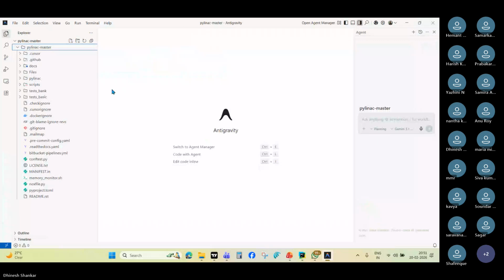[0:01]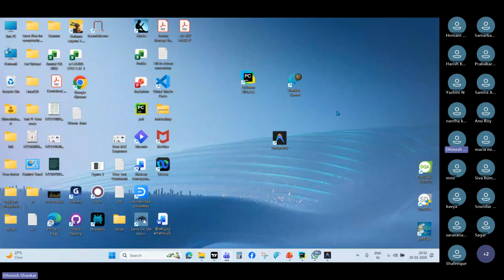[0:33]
So what we'll do, like that, we'll build our own application for field size analysis right now. Fine. See, this is the Pylinac module, which contains most of the QA analysis: log analysis, nuclear, picket fence, planar imaging, everything is there, even field analysis as well. So now we are building an application to do one particular QA, which is field analysis. We'll do it right now.
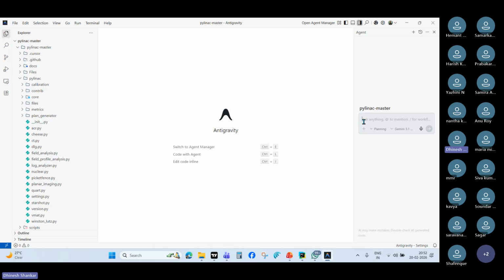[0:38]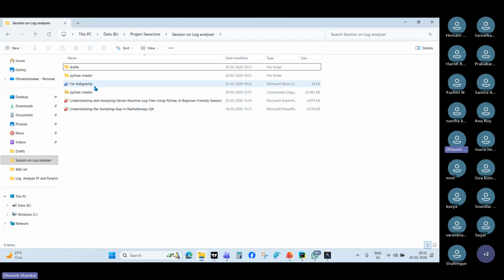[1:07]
So for that, what we have to do is give the instruction here on how the GUI interface will be created. There are two ways we can give an instruction. One is the blind, layman view. Simply type that we need to create a GUI, and it will create it, but it will take a longer time. And we have clear-cut information. For example, here,
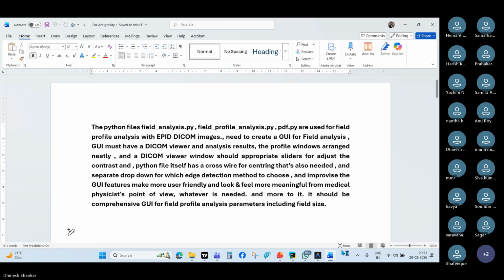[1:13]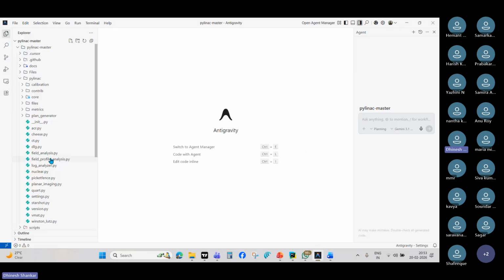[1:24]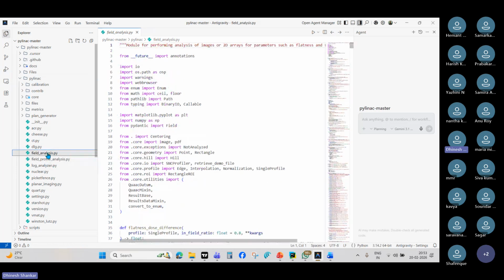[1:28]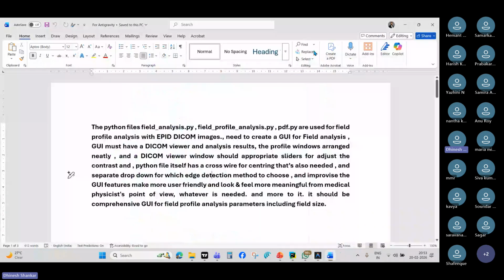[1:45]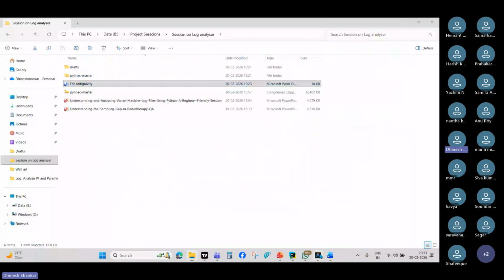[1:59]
I hope it is very clear to you. This Python, we have to mention somewhat very clearly. See, in the Pylinac files, this particular field profile analysis, field analysis.py and the PDF file. These are the three files. The most important thing is to analyze the EPID-based DICOM files for the field analysis. So we'll have to make sure that it is mentioned here. That is what I have mentioned here: field analysis.py and field profile analysis.py, and the PDF is for the final results, which will be generated in PDF format. These are the Python files. They're already here in this one.
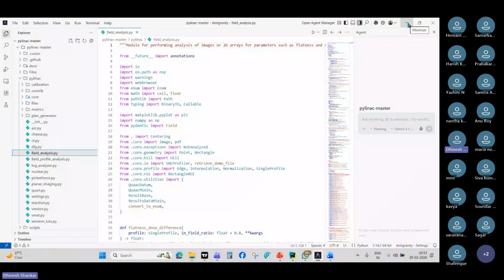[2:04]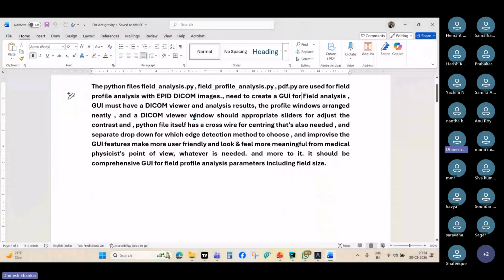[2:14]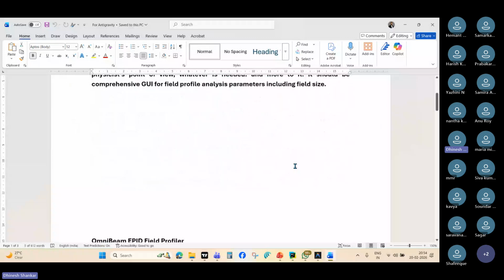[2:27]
We are using these files, on top of that Pylinac QA module, to create an application. For that, one way is simply writing that the GUI must have a DICOM viewer, analysis results, and the profile windows arranged neatly. Those are the instructions we are giving. This is the simplest way. Otherwise, we'll have to give very clear-cut instructions.
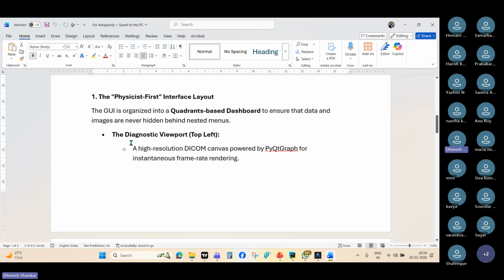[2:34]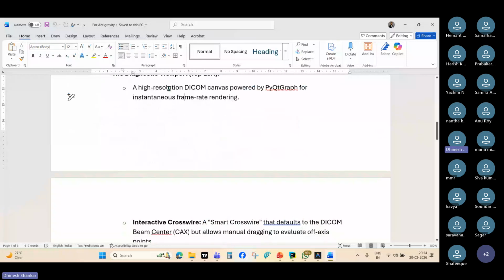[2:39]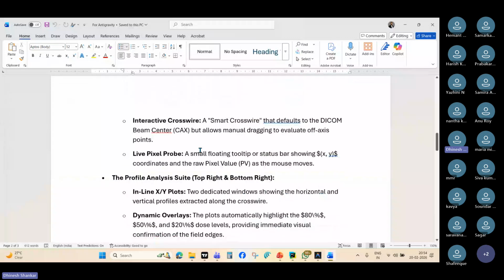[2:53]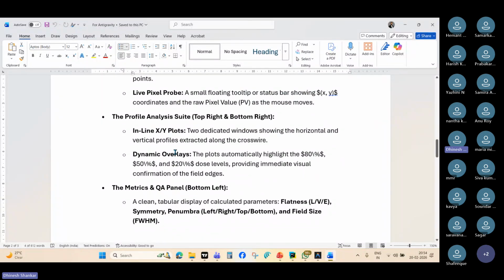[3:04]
So the diagnostic viewport will be in the top left corner. We'll have to use the DICOM canvas powered by PyQtGraph, one of the Python libraries, for plotting a graph from the DICOM image. The same way, we'll have to mention everything. We need an interactive crosswire for the DICOM images in the DICOM image viewer. So each and everything you will have to mention. If you mention it that way, in one shot, you will get an application as we desired.
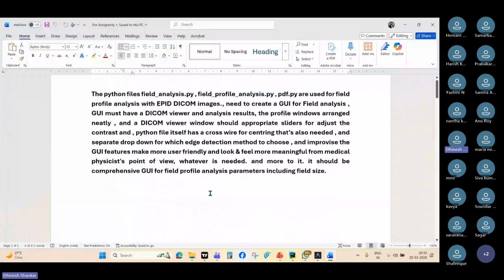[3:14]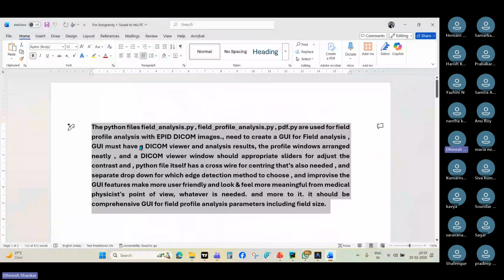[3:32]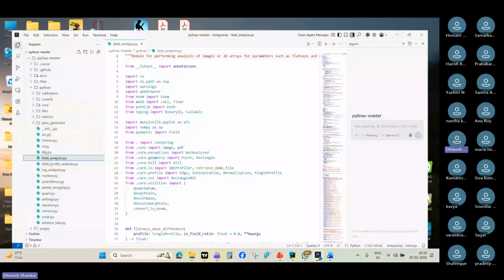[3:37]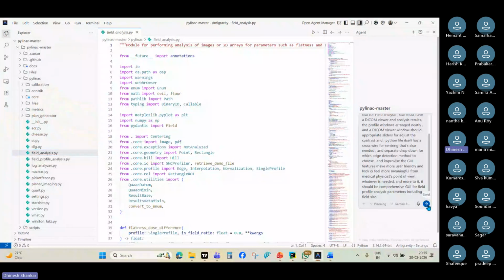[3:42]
Otherwise, what will happen if you follow the simpler instruction? Still, we will get it, but it will have some setbacks. Again, we have to correct it, and that will take much more than one to two hours. So I'm just simply copying it here, pasting it here. I'm asking this particular AI agent to build a GUI application. Fine.
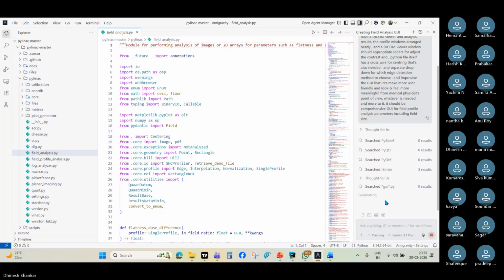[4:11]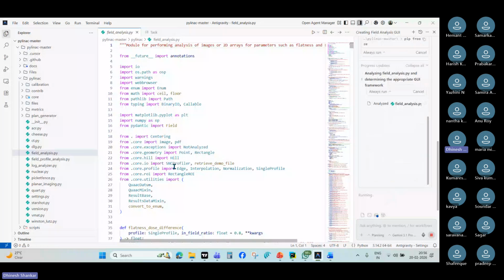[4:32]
Now, this particular AI agent is based on Gemini. In the same way, there are so many AI agents available. Each performs certain tasks in a better way. Claude AI is mostly known for large-scale coding. Now it will check each and every file in this particular project. It will look for these two files and do the QA process. It will take a while. If you have any questions, please ask.
Hello, sir. Am I audible? Yes, that's audible. Yes, please. Yes, sir. I had one doubt, sir. With this trajectory file, sir, can we find out the parallelism of jaws, sir? The angulations we will measure, no, sir? That one.
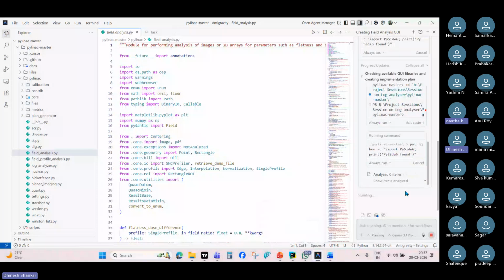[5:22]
With this one we cannot find the parallelism of the jaws, but there are other ways to find the same. Not with the Pylinac model. There is another code where we can find the parallelism of the jaws. It will give you all four jaws' parallelism parameters with certain angle values also.
Is that image based, sir, or internal trajectory file based? No, it is purely image based. We have to give any field size, mostly a larger field size, 30 by 30 or 40 by 40. If not, give an exact square field of 30 to 35. There is a logic behind it.
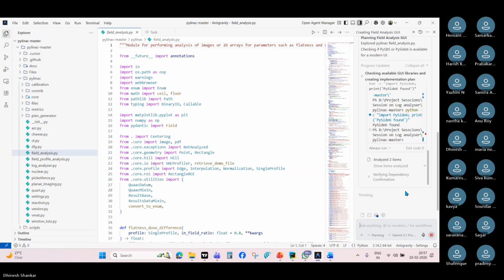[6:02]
It will analyze it and give you each jaw's parallelism value, whether it is deviated from zero by 0.1 degree or 2 degrees. Usually it is 0.1, 0.2 degree. It will give you the clear-cut value. Manually we adjust the angle, right, sir? In case any error comes, the engineer can manually adjust it.
Okay, sir. Thank you. Then I'll share the code with you if you want. Yes, sir, definitely. Thank you.
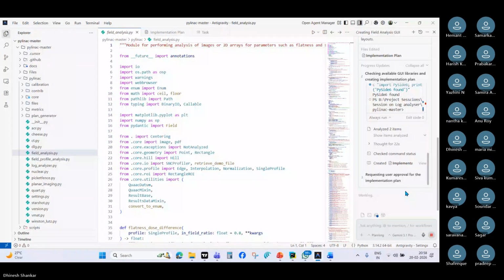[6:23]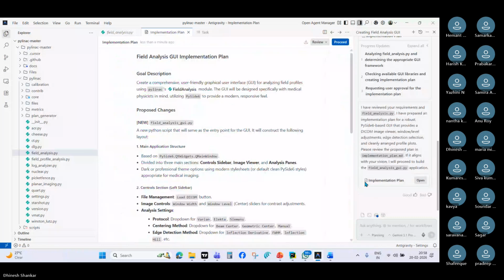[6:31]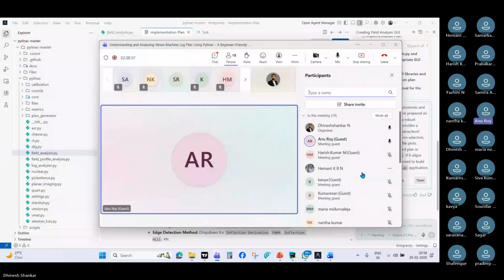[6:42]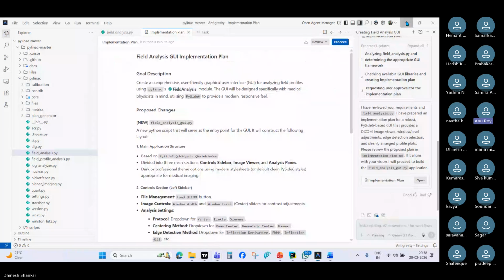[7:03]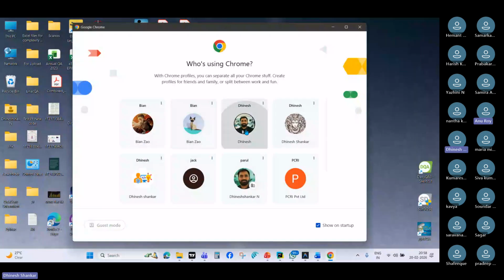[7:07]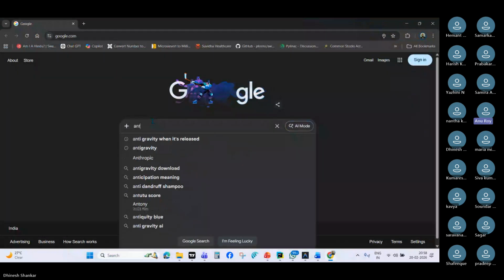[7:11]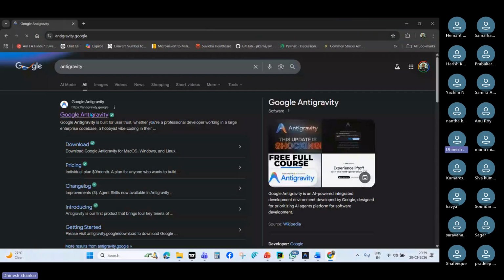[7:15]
Hello, sir. Like Python, we want to install this Anti-Gravity program for creating any application. Yes, just like PyCharm, we have to install it, but it is a lot easier than PyCharm, the installation process and everything. Will you include in any session how to install PyCharm for beginners? No, sir. This Anti-Gravity is a totally different program. It is an IDE along with the agent.
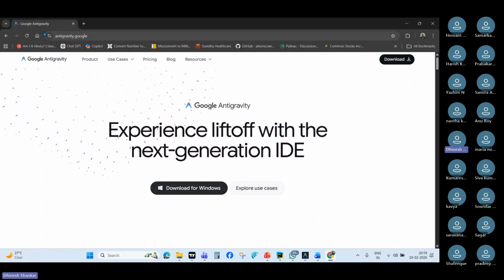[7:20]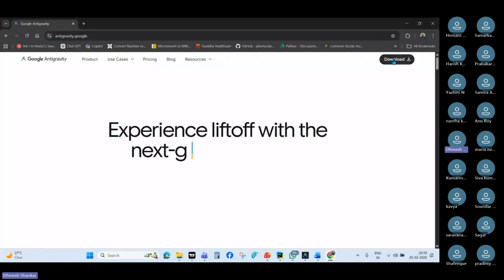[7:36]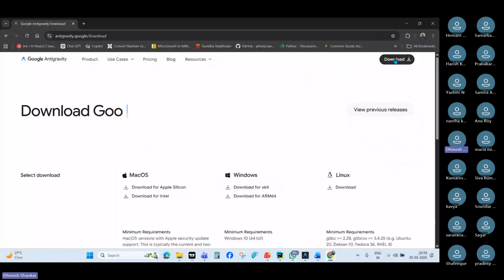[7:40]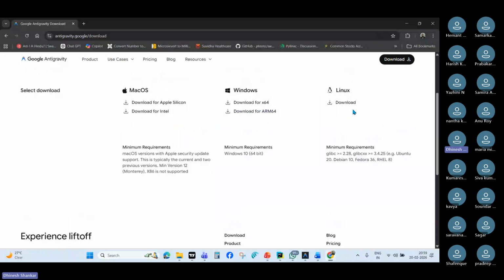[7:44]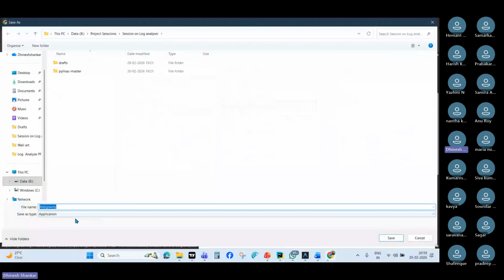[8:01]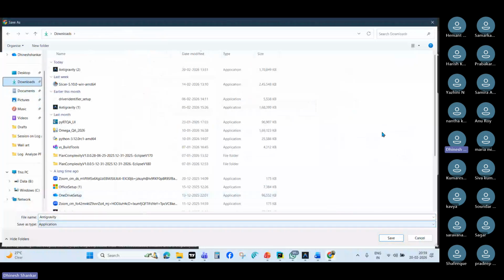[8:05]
Simply search in Google for Anti-Gravity. The first result will come, like Google Anti-Gravity. Can you see my window? Yes, sir. If you click Anti-Gravity, in the top right corner there is a download option. Once you click it, there will be three options for which system you are downloading, whether Mac OS, Windows, or Linux. Then there is a download for the 64-bit one. If you click that, the application executable file will open. You have to save it.
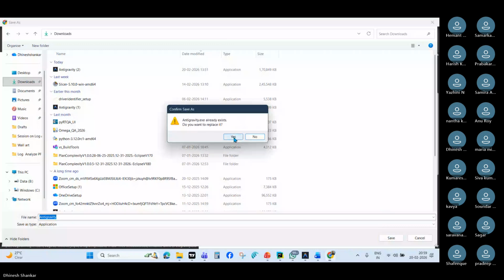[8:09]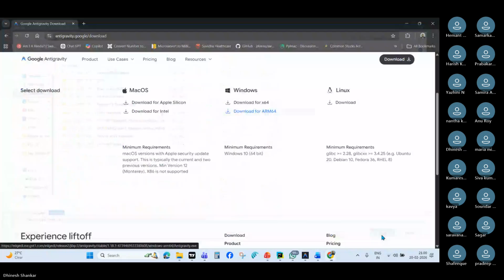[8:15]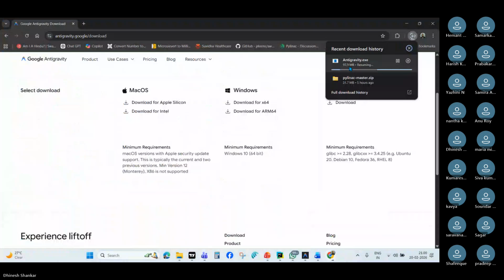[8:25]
It is already there, I'll do it somewhere else. Okay, it's downloading right now. Can you see the antigravity.exe? Yes, sir. It will take some time.
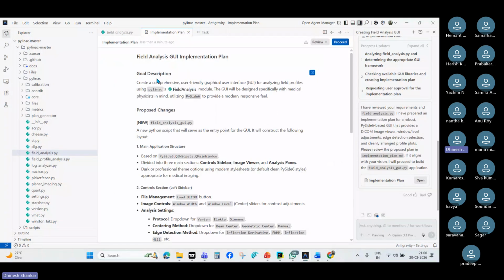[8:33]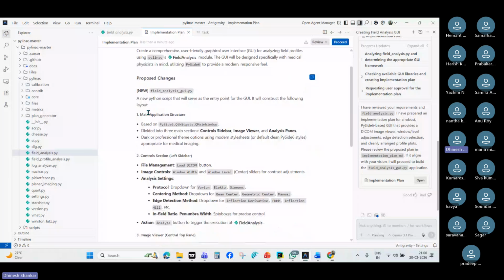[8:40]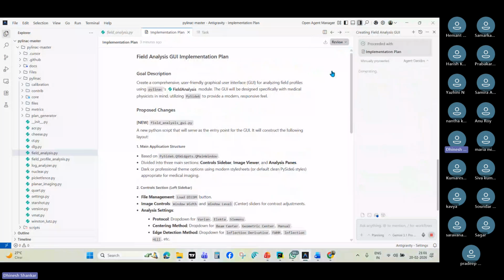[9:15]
In the meantime, it has created an implementation plan. If you read it thoroughly, it will give you the picture. The main application structure will be like this, based on which Python library it is using for the user interface, and how the sections are divided: control sidebar, image viewer, analysis panes, file management, load button, and image controls for window width and window level. Everything will be mentioned here. We have also mentioned a drop-down for Varian Elekta protocols. Once it is done here, we have to give proceed. If we give proceed, it moves on to generating the GUI-based code.
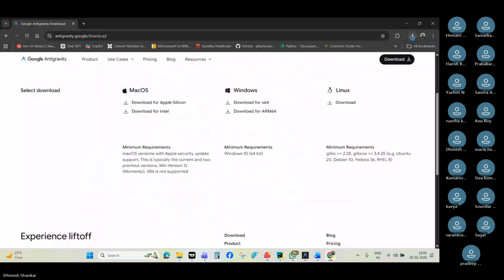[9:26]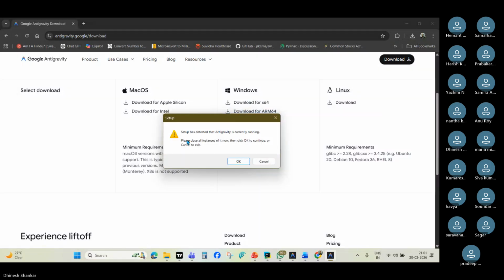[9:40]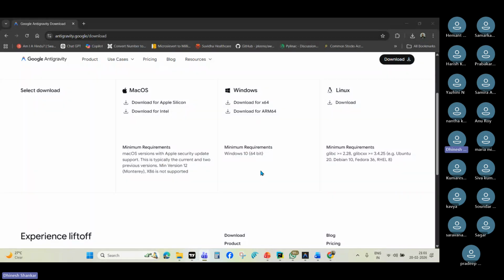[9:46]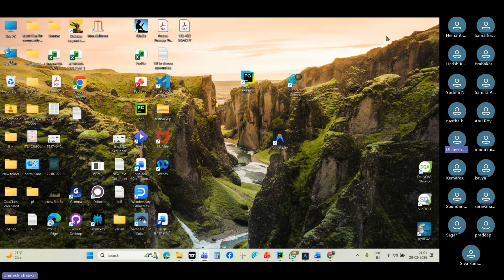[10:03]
Anu, right? Anti-Gravity is installed. Yes, sir. Once Anti-Gravity is installed, you simply click it here. Now Anti-Gravity is currently running, that is not opening, so I'm simply canceling it. Another window will pop up. There are some checkboxes. You have to check everything and press the next button. Within a few seconds it will be installed, and this is the icon file. It will look something like this.
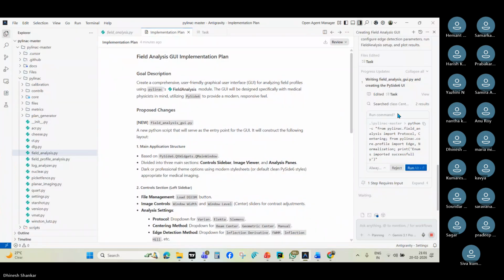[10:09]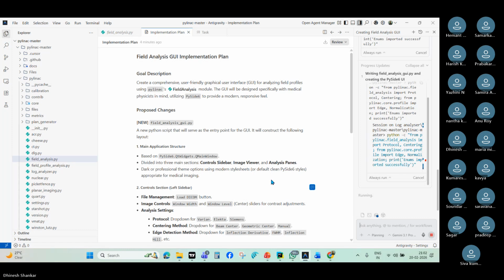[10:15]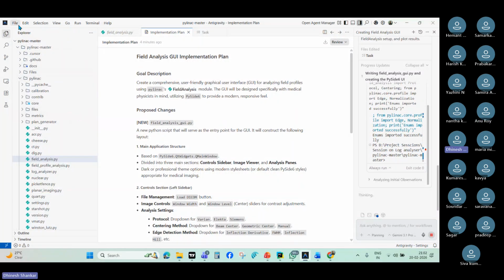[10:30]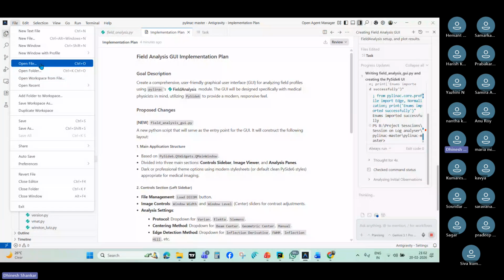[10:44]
So when we open this one, sir, we will get all these Python files which we are seeing on the left side of the screen. This particular section is called the project. I cannot go through this right now because it is generating here. You have to create your own project here. Open the folder, or open the file, or new files.
Like you have to create a new project depending upon your need. See, here I have already opened, by clicking the open folder, the folder where the Pylinac models are stored. In that particular explorer, I see all the Pylinac models are already stored in this location. So I opened it. I simply mentioned these two files are mandatory for me. With these files, just create a GUI.
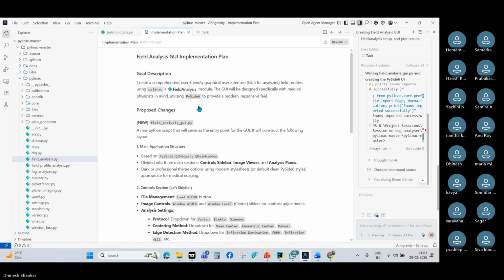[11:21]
So now it is doing the job. So we need some Pylinac modules to use this, sir. Yeah, see, first you have to make sure what you need exactly and what kind of problem you have, what kind of challenges you have. Based on that only we have to work. Okay. Now we have chosen that we need to do a field analysis.
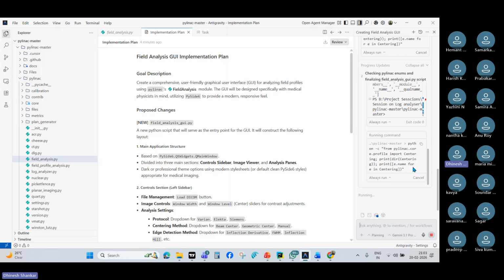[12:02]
For that field analysis, every time we have to give a run command if any error comes like that. For that field analysis, we have chosen the Pylinac model to do it. It is already a pre-built field analysis QA. I have chosen it because it will be faster to do.
Otherwise, without this Pylinac model, we can still analyze the EPID based DICOM based images for field analysis, but it will take lots of resources to go through. It will take a lot of time to generate the code, debug the code and validate it. So this is already there. By using that, I'm just creating it. It's a much easier and simpler way.
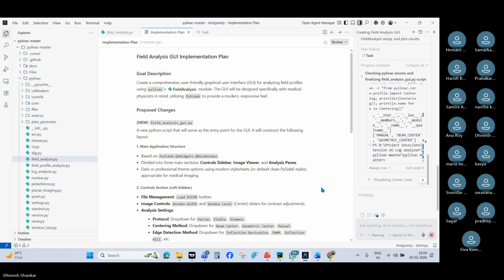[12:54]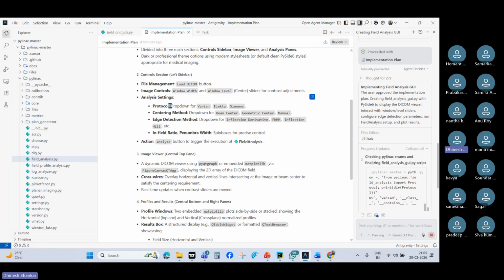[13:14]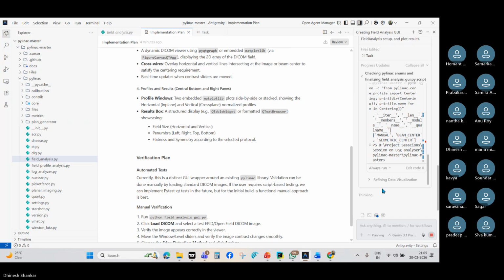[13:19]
So we have to decide first, sir, what is the problem you have, what is the task you want to carry out. Based on that, we'll have to work. See, if you see like this, we have given an implementation plan. See how to implement it. Now it will automatically think, and even execute that in the back end. And if an error comes, it automatically goes back and corrects those errors. And finally, it will give us a full-fledged GUI.
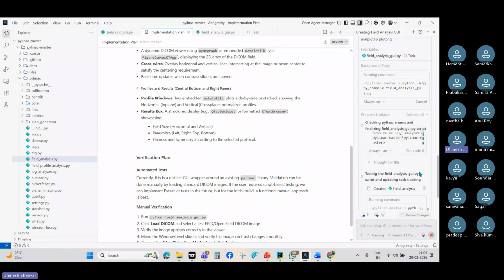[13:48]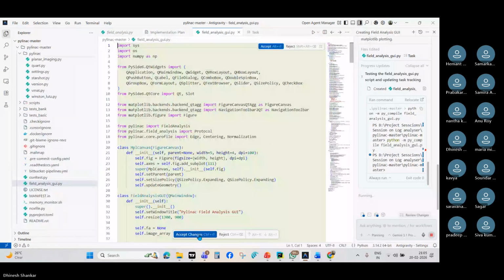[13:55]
I'm doing this for the first time, but for the particular field analysis, right? Even for the jaw parallelism, which Mr. Nandakumar was asking, we can do the GUI for that also, for which we already have the code.
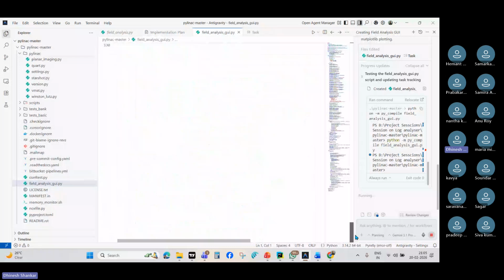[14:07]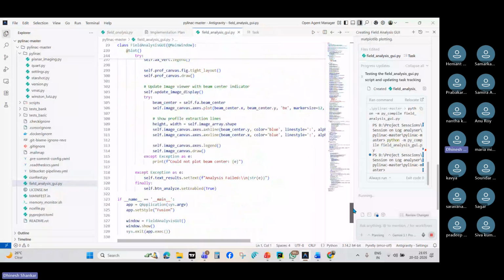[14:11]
See, now you can see the field_analysis_gui.py. That code is completely generated here. I don't know how many lines of code there are in the whole thing, nearly 330 lines of code generated right now for the GUI. Okay, and still it's running. We'll have to wait a few more minutes. It just keeps on running and correcting the errors. Then only can we proceed with the GUI.
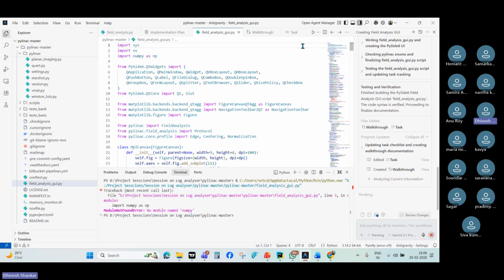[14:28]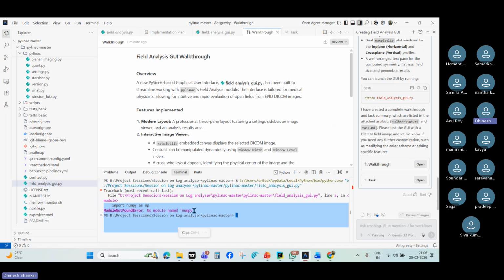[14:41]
Right now, I just run this program, field analysis.gui, using this Python file. See, the error comes: module not found. That is called numpy. Okay, so that particular Python library is not there. For that we have to pip install that package. Pip install numpy. So now we are installing that particular module here.
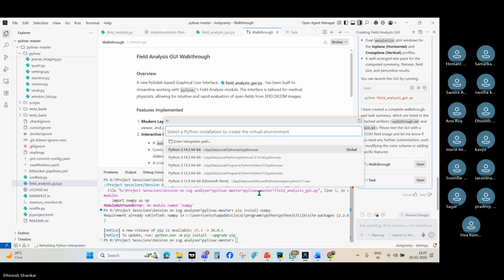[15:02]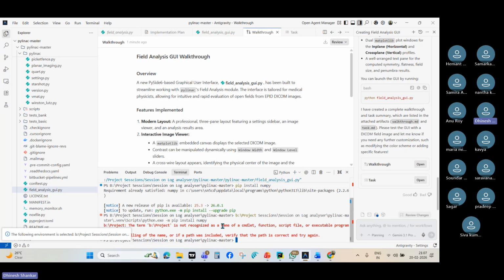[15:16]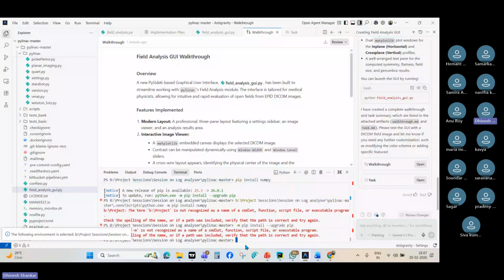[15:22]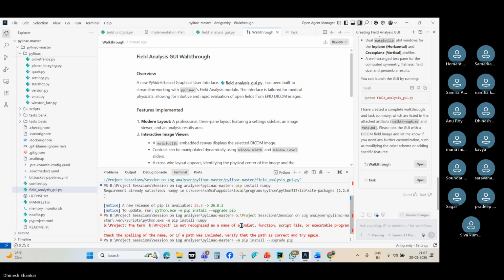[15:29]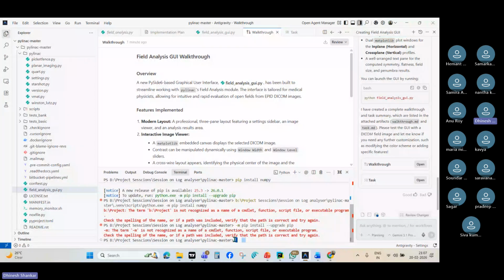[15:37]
So now it is showing that we have to upgrade certain things also. The pip installation is also outdated, so I'm just upgrading that. Okay. So still there are some errors popping up. What we can do is simply copy the error and say fix the issue, giving the instruction to this AI agent to fix it. Now it will do the work.
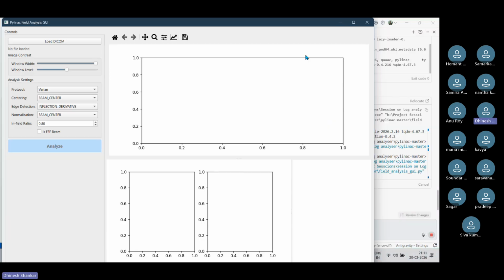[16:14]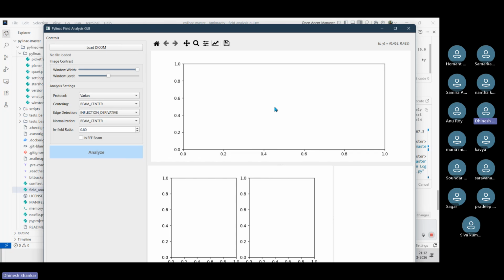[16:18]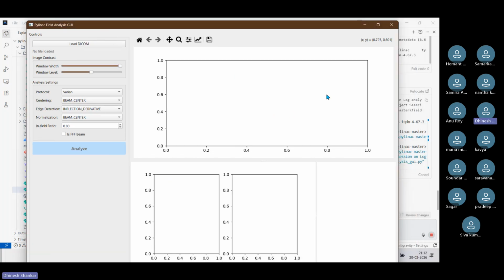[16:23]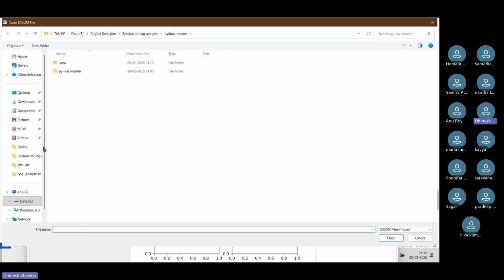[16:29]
See, okay, I made a mistake here. In this particular pip install, numpy was not supposed to be typed like that. There was a typing error. That is the reason it was not installed. After the package is installed, based on the input we have given, the GUI application has been generated here. Now this particular tab is to load the DICOM file. Now we'll try executing it and see how this application is working.
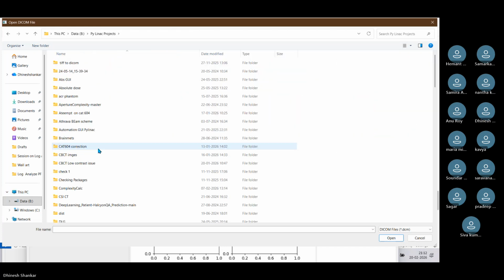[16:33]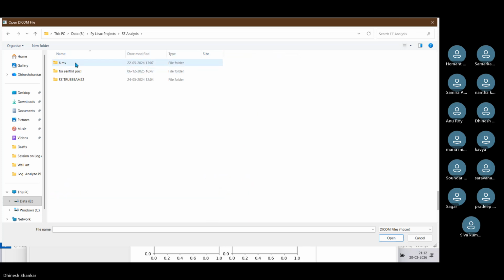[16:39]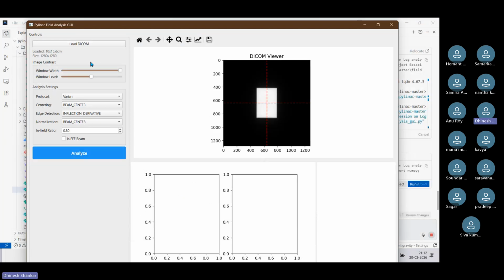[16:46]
Okay. Once it is loaded, the DICOM viewer shows the 10 by 15 file. This is what we used for window analysis. It has given a protocol for Varian, Siemens, Elekta, and asks whether you require beam centering or geometric centering. It has the edge detection method you want to use, like full width at half maximum or inflection here. And the normalization will be beam center. Okay, let's see how it is analyzing it.
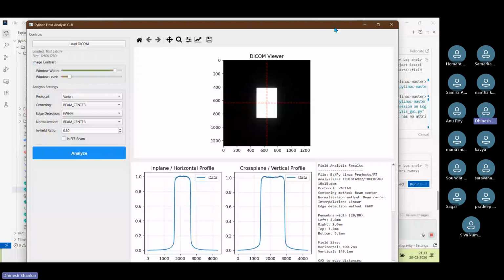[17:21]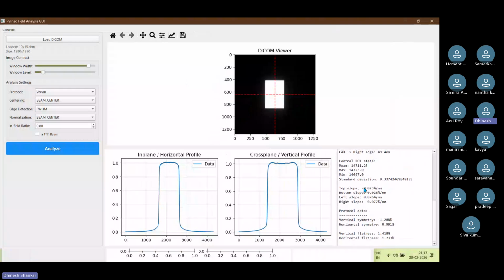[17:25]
Once it is analyzed, I hope you can see the results will be shown here. And these are the in plane and the cross plane images. Okay, the same way shows which protocol is used. The one thing I have missed out is to generate a report.
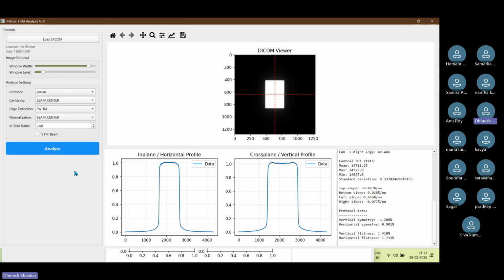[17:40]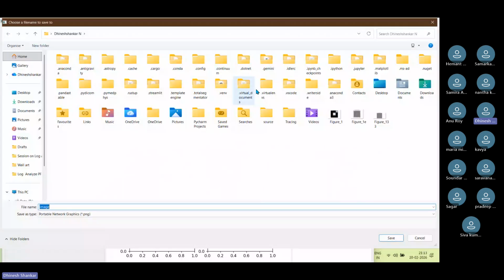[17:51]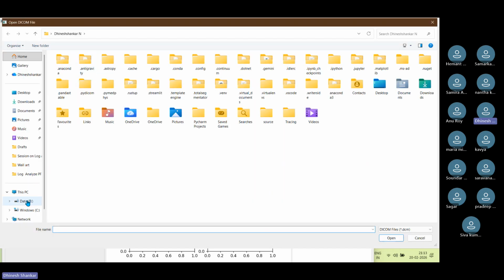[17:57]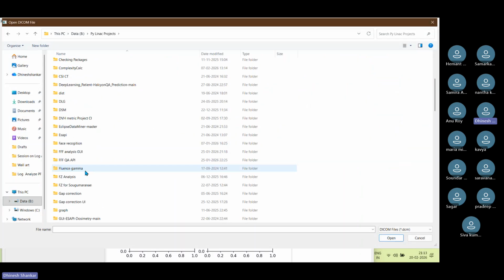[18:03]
Okay, so there is no button or toggle generated for generating the report. I think, okay, let's use this save figure. Okay, it is only to save the figure, not to generate the report. In the same way we can generate any kind of QA for your repetitive tasks. Let's check one more thing.
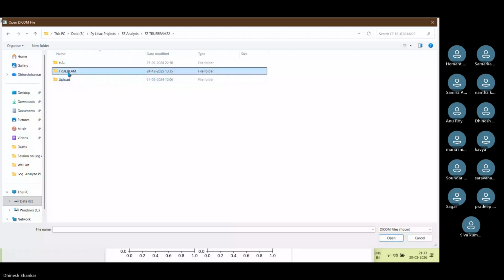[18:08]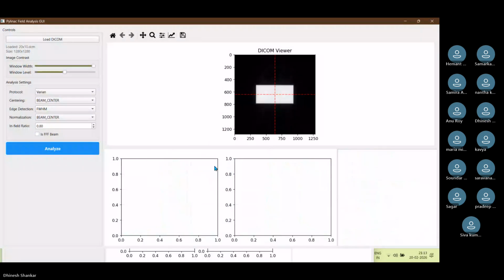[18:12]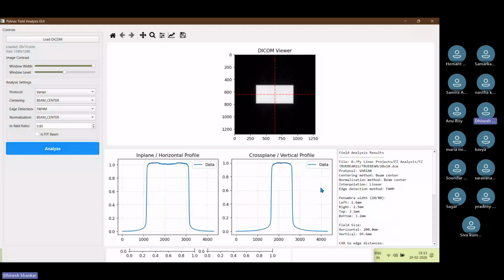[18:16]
For 20 by 10. Okay, this is the 20 by 10. We are analyzing it the same way. Okay, this is the in plane horizontal profile. Now as per this it is completely wrong. This is supposed to be in plane. Okay, not this one. And cross plane is like this one.
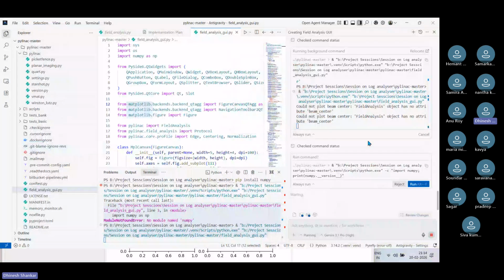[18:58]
Now this is the logic behind it. Then we need to correct it. We have to mention that this particular one is the cross plane and this one is the in plane. This is the part. It is our responsibility as medical physicists to validate the code. So we have to be very clear on that. Building an application nowadays is very easy, but our responsibility lies in reviewing this particular code and making sure of it.
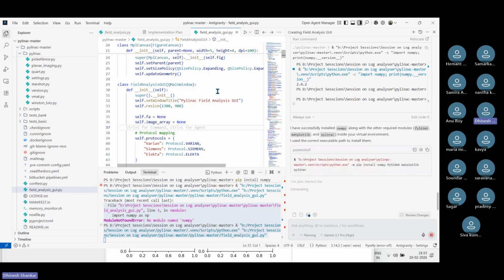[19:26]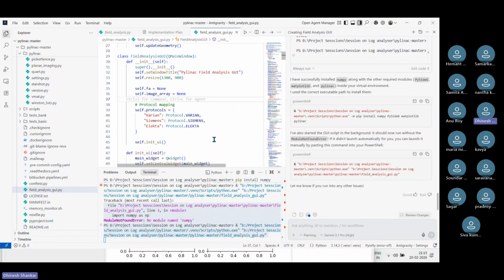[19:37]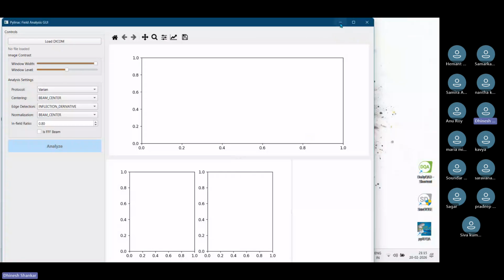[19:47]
See, here we found out that in plane and cross plane are swapped. Now we have to find which block of the code is defining the in plane and cross plane, and we have to correct it. That is the main thing here. That's the purpose of the whole coding part. The code has been changed after the AI agent evolved. Okay. Is there any question or shall we wind up this session right now?
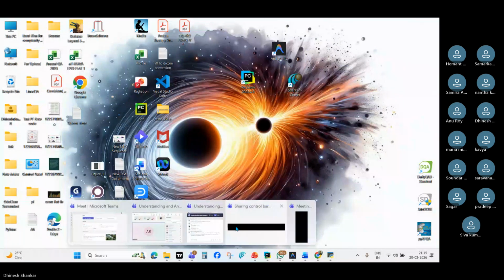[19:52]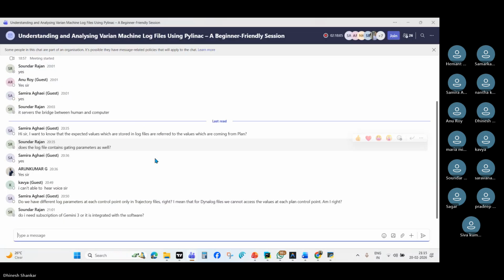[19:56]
Mr. Soundarajan, do I need a subscription for this? No, no, no. Actually, this is kind of free. This is based on tokens. Nearly 10,000 tokens they are giving. It is practically free. We can use it for small scale projects. There are so many ways we can get it free. If you are using Jio services here in India, for 18 months they are giving it free. Literally 18 months we can use Gemini Pro. For a small project, if you have several Gmail accounts, still by using different Gmail accounts we can opt for a free one.
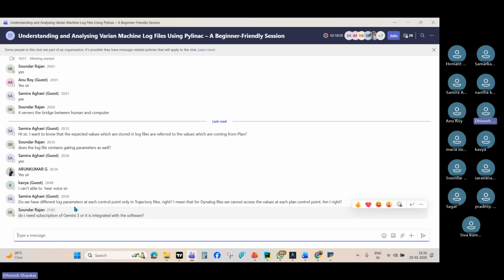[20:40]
And do we need a different log parameter? Can we analyze film images for field analysis in Python? Yes, exactly. But for film analysis, we have to convert the film to a DICOM image. There is separate code for how to convert the film to DICOM images. Then we can analyze those film images. But we have to make sure there are no sharp points or bends, and the film has to be perfectly scanned.
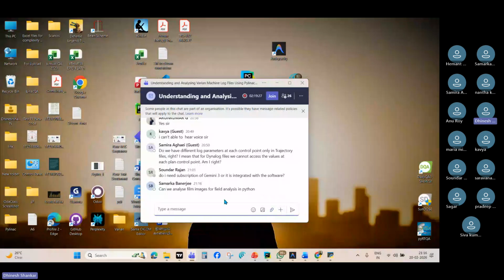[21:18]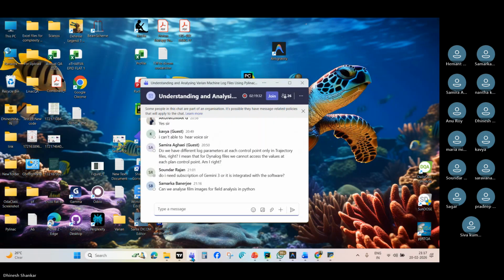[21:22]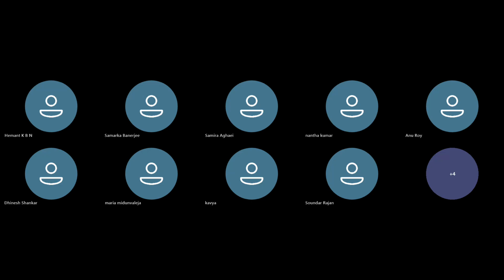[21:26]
If you have any questions, drop them here, or you can unmute your mic. We can ask. I'll share the code for job parallelism with Nandakumar tomorrow. Is there any questions? Just like Antigravity, there are so many other AI agent tools also available. I find this one much easier and free to use compared with other AI agents. Any questions, or will we wait for 5 more minutes? If you have any questions, then we can ask.